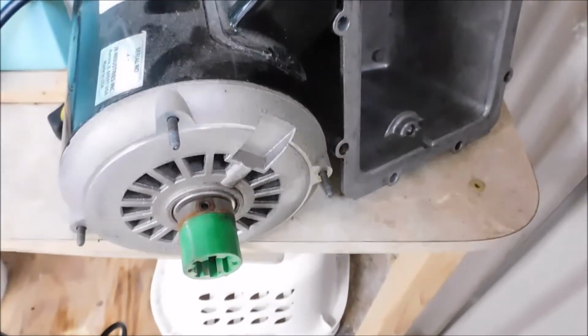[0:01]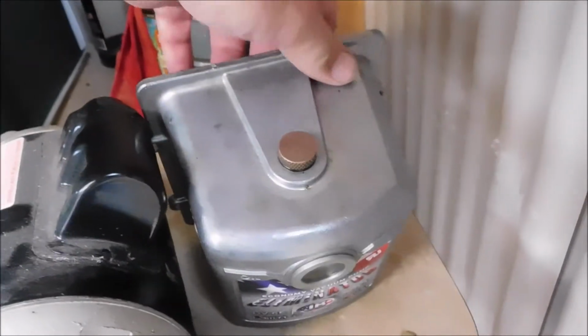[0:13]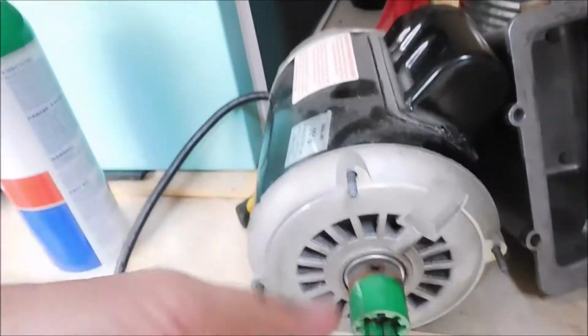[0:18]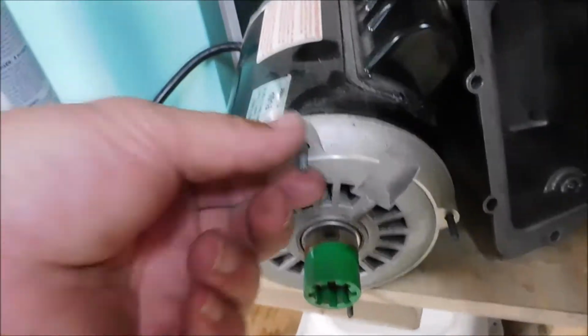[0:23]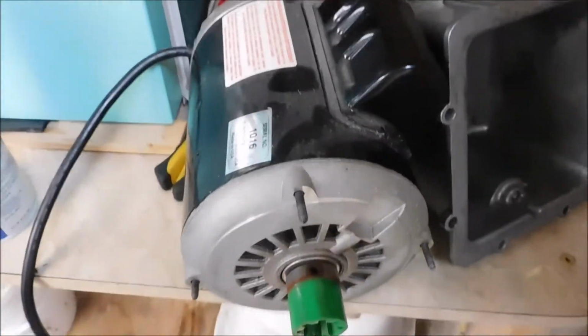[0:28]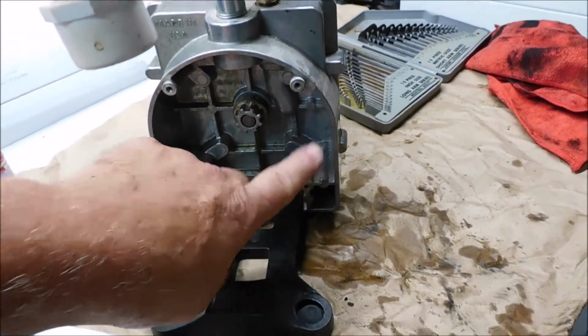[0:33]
Okay, I have to work on the vacuum pump for the freeze dryer, and I got the front cover off. Okay, and the motor, there's a little star coupling that goes from the motor. There's four long screws holding the pump in. There's four long screws go right in here. That star coupler goes right there.
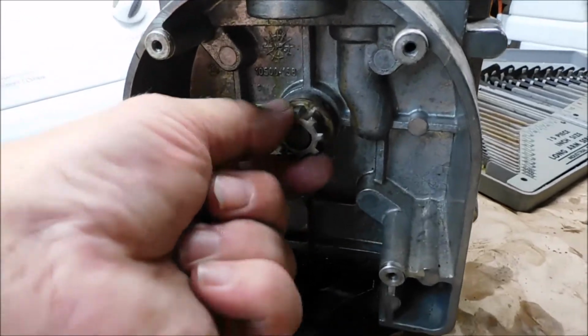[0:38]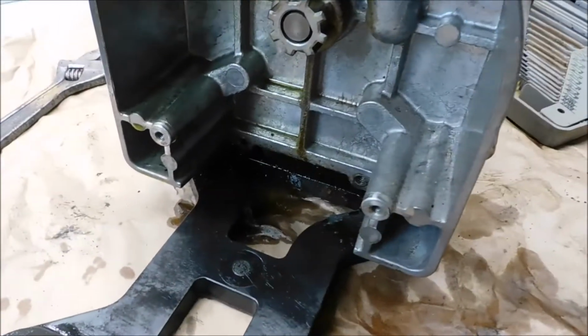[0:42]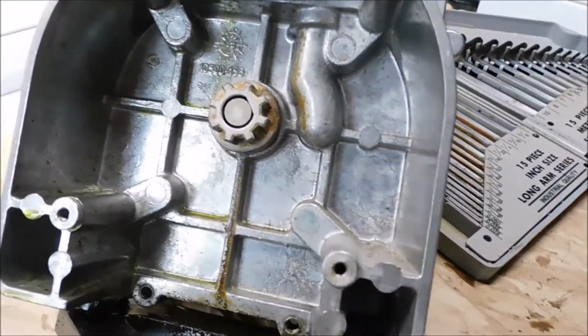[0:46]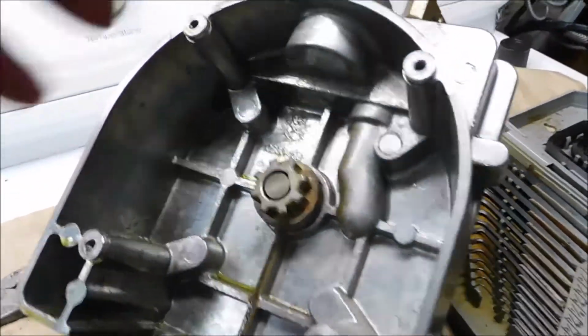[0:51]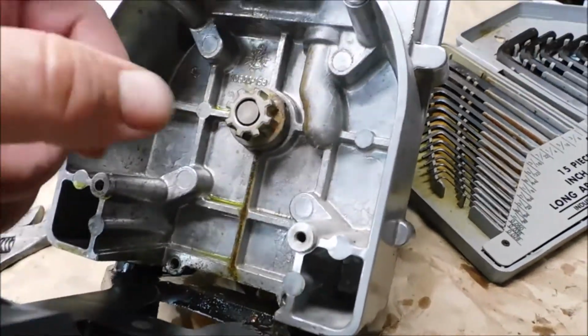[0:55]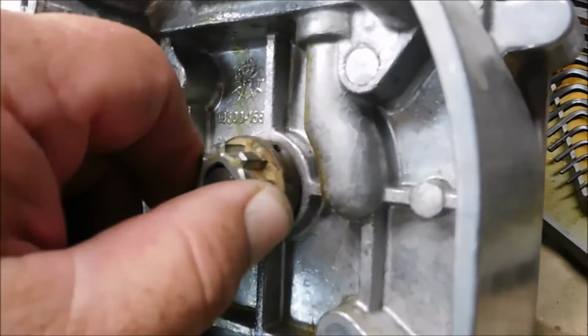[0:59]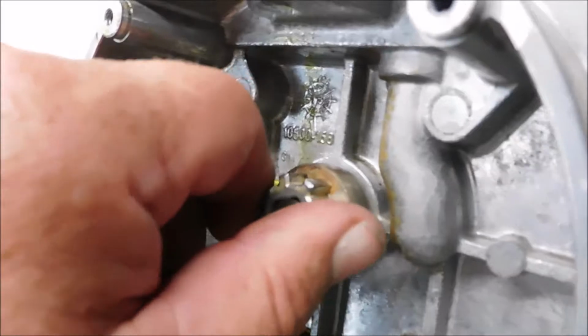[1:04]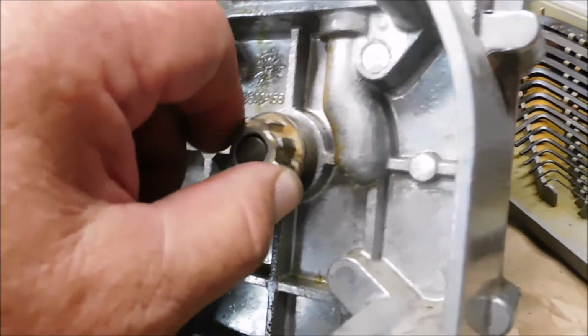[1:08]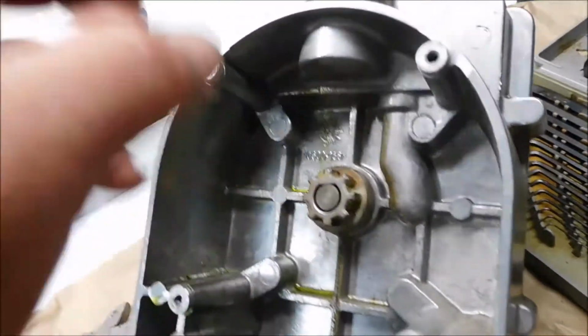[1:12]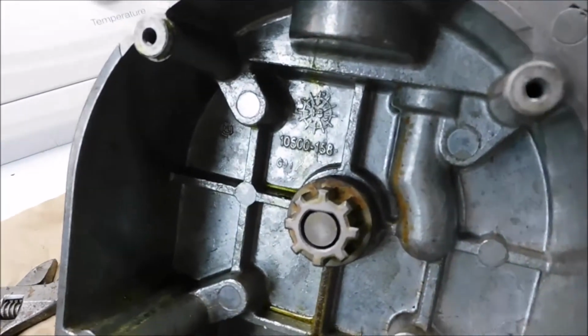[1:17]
Okay. There's a seal back in behind here. It's leaking. Okay. And I need to replace it. So you can tell by looking at these four corners that there's screws on the other side holding it in. There's also an Allen head set screw in there. Okay, so we got to get that off so that I can pull that shaft out. So I got to work on those two things. I think I'll give that a shot at WD. Okay, then this pump comes off the other side here.
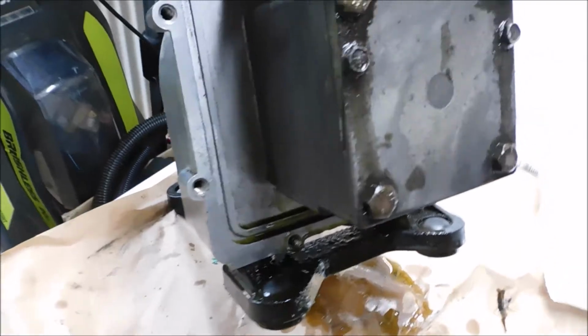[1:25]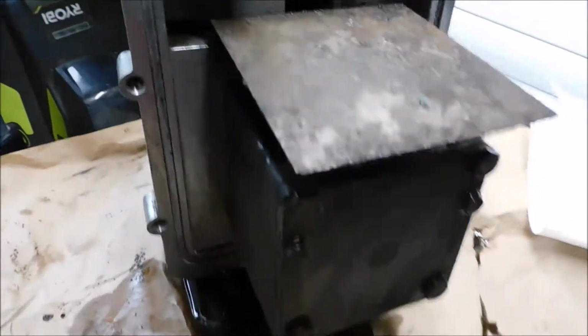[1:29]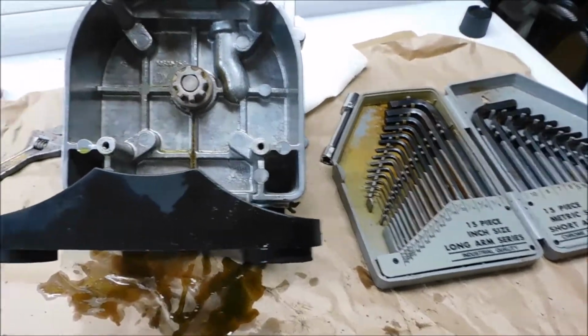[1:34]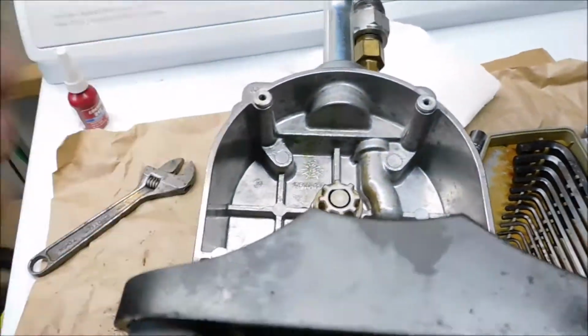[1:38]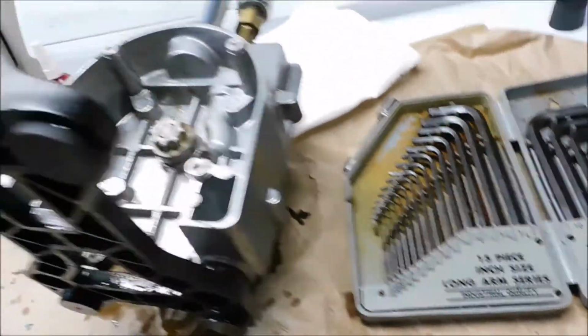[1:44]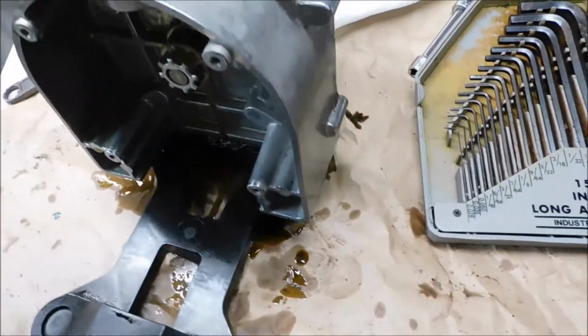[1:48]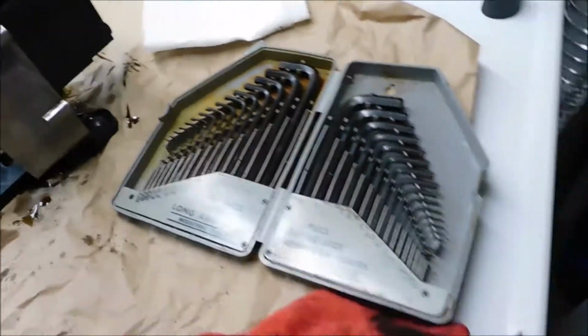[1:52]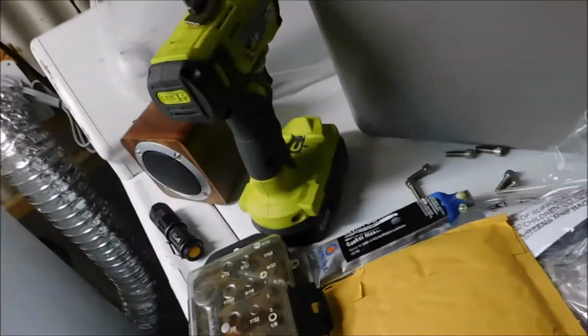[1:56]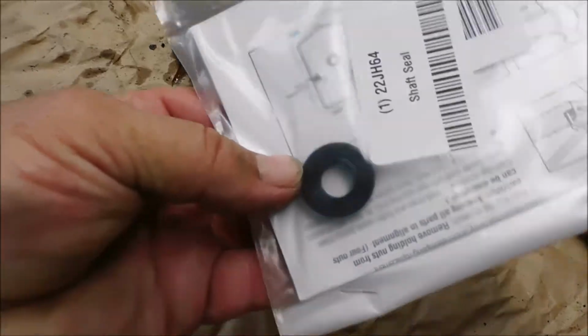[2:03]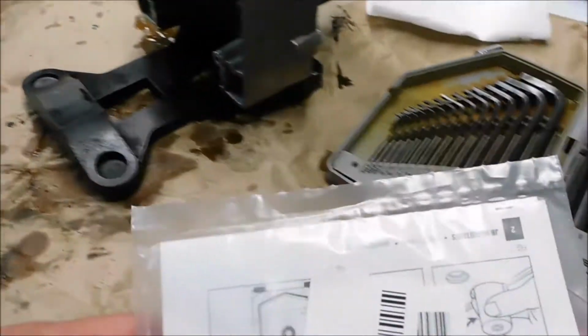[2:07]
So, yeah. Freeze dryer doesn't work too good without vacuum, and it just wouldn't pull a good vacuum, and it was dripping oil. And so I ordered me a new seal, a new pump. Cost over $300. I paid $3.02 for a new seal. Okay, for the back end of that over there. So we're going to change it out.
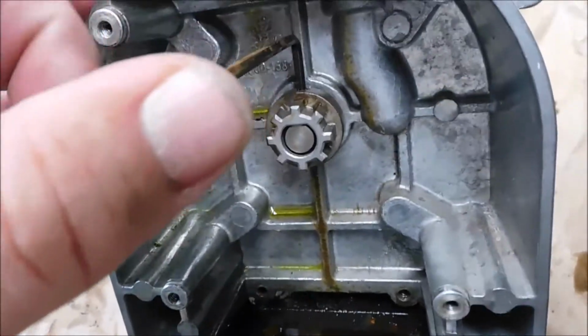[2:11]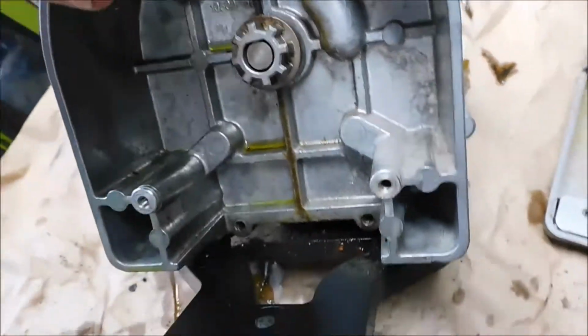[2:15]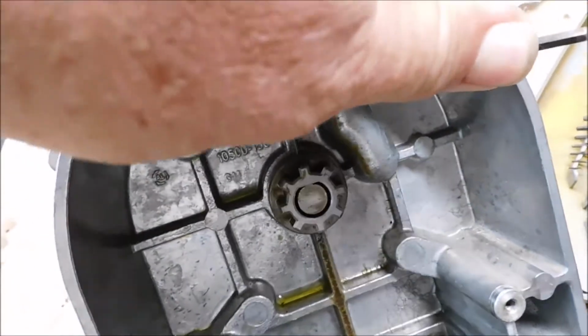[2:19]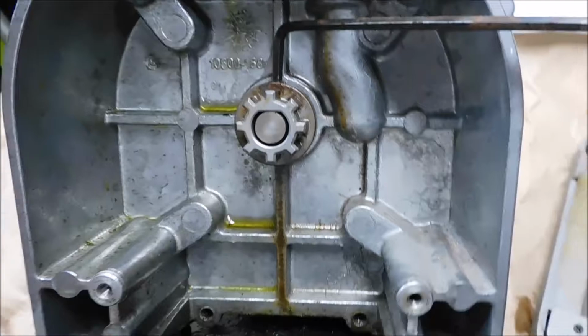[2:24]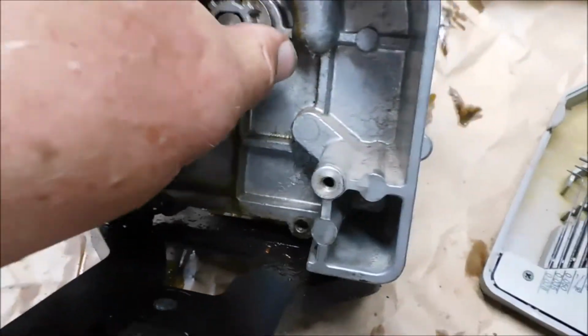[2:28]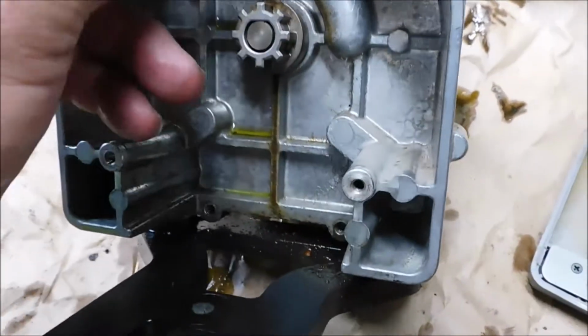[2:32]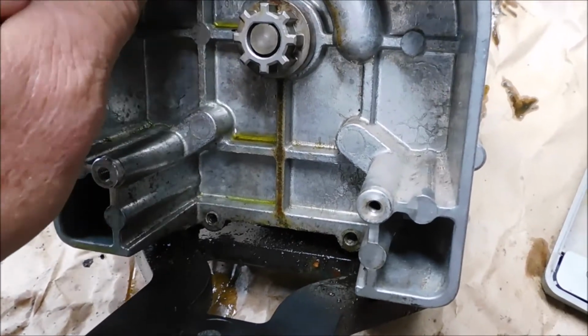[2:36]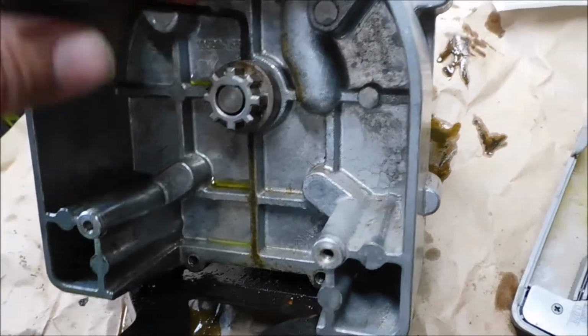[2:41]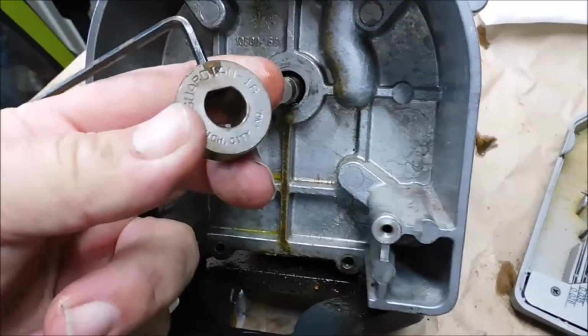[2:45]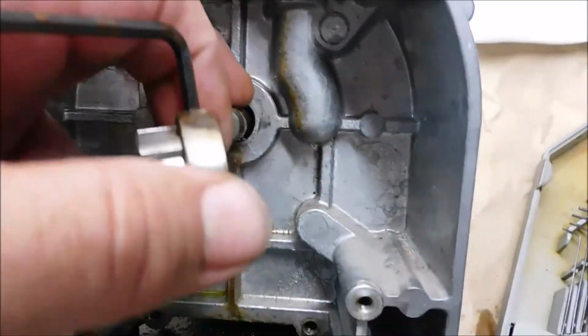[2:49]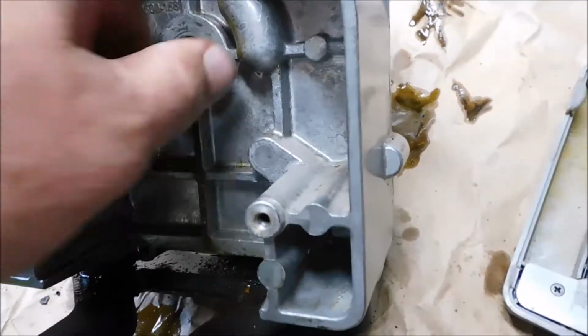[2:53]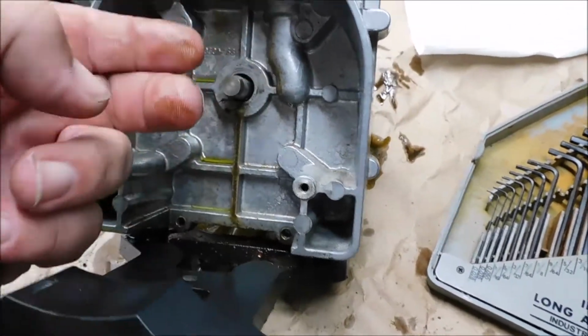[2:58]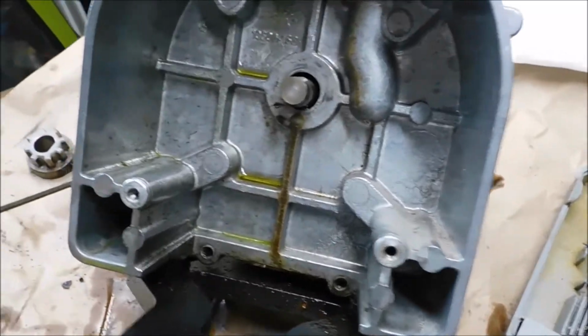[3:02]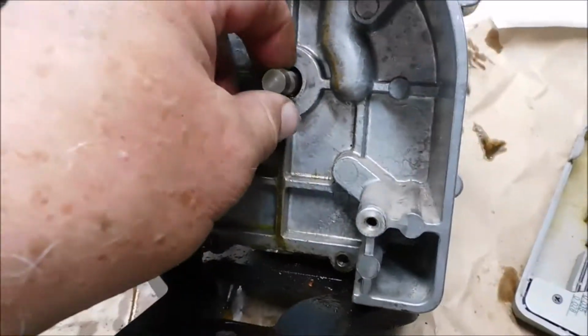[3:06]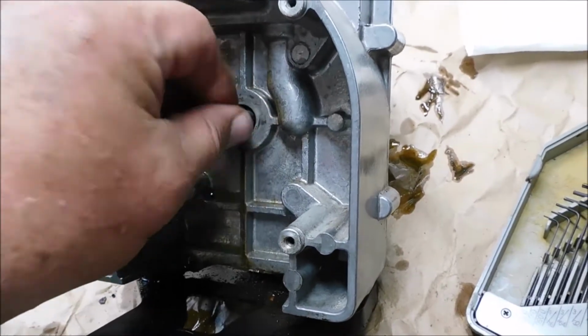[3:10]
Okay, so here's the Allen wrench. Feels a little stiff, like they might have had some Loctite on it or something. That's what I'm going to do. I don't want it falling off, I'll tell you that. Let me get another bite on there. There we go. Nothing to it. Pretty easy. Now make sure that shaft's nice and clean and smooth when you pull it out. Now I know we're not going to worry about that seal on the way out, but we will on the way in. And there's no sense tearing anything up that you don't have to. It's just common practice to make sure that that's clean, smooth, and ready to go out the shaft.
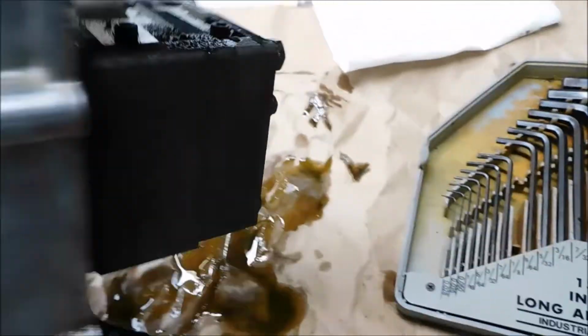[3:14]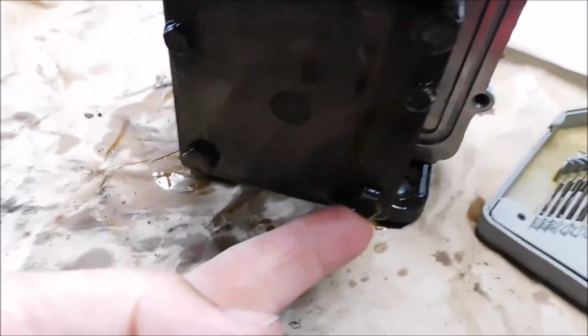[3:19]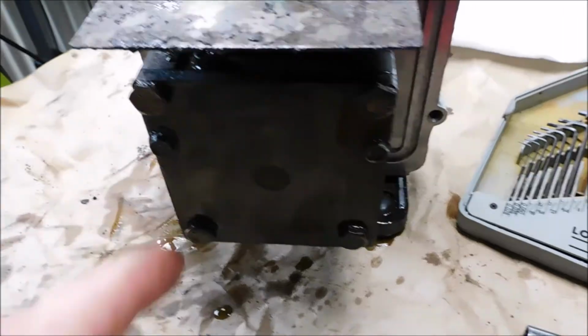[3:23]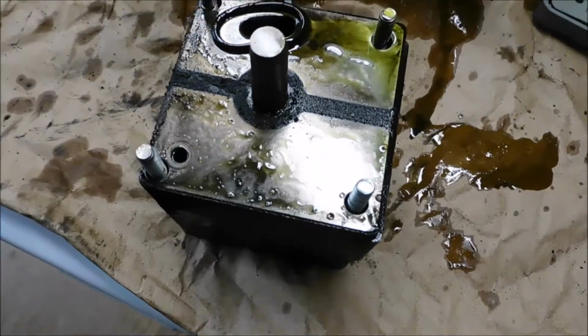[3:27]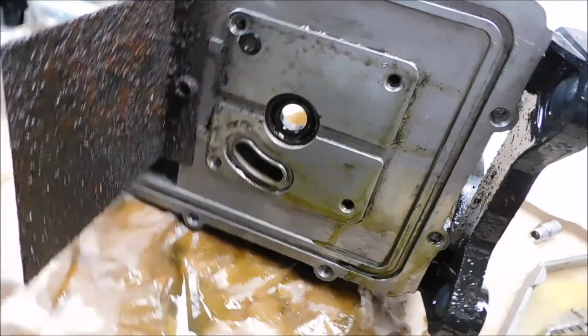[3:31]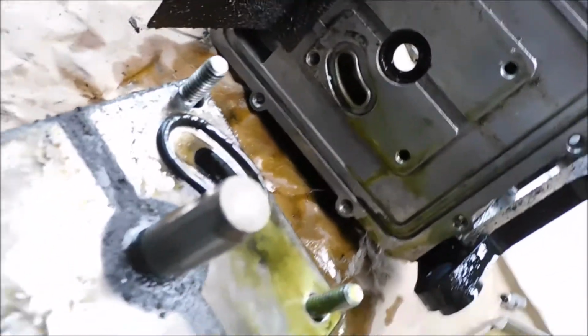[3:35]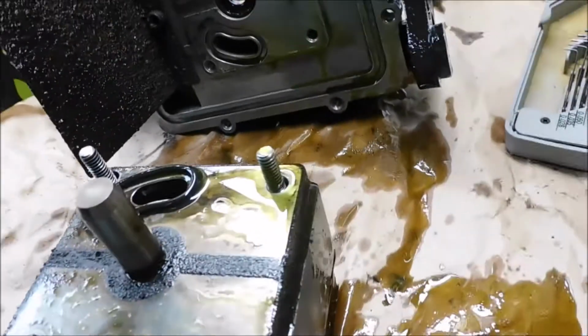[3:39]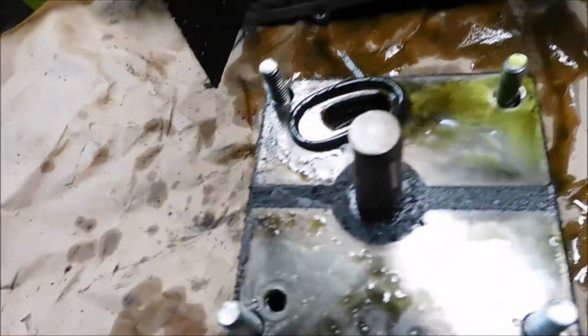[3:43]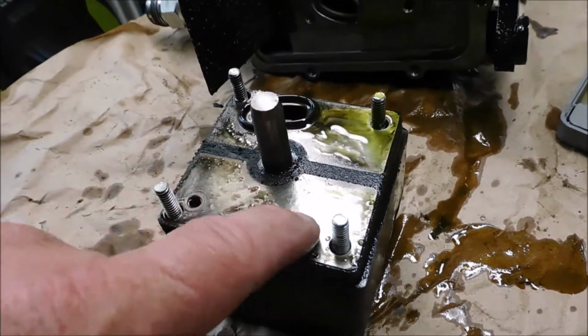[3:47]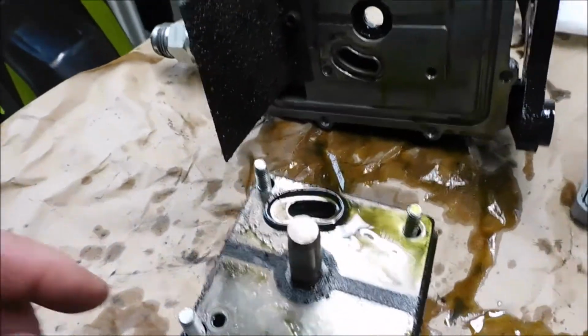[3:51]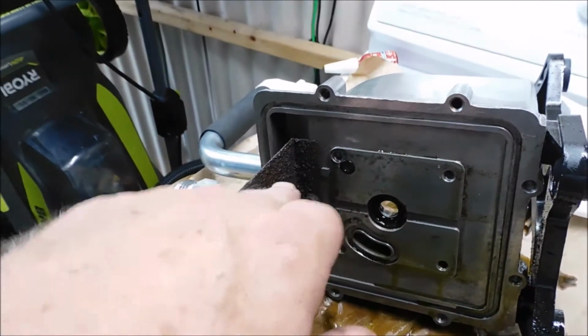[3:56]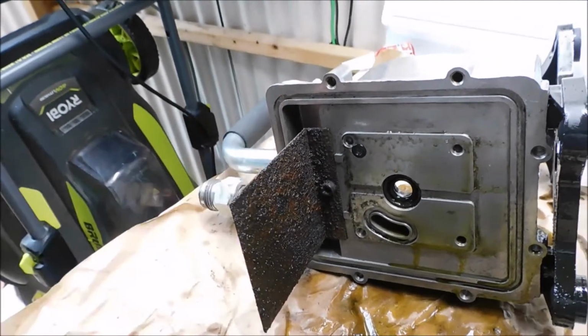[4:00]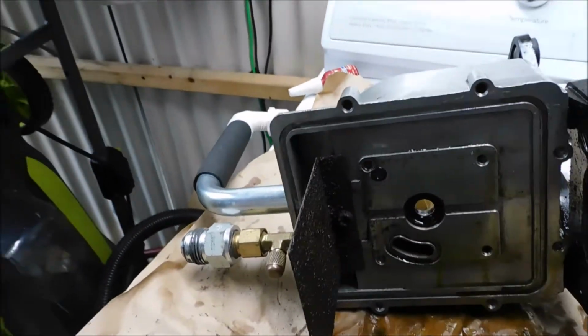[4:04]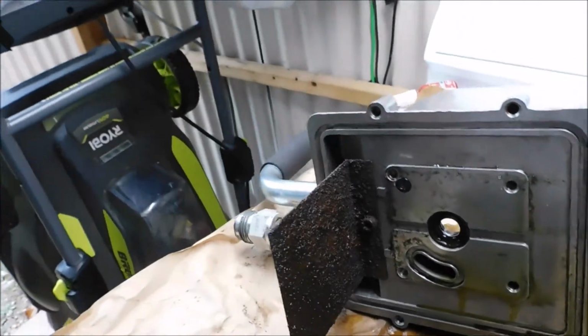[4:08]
So we'll go ahead and pull these four bolts out then on this side here. And get them out. Pull that pump out. Okay, there's the pump. You can see where it came from. It actually goes like this. That's where it came out of. And it's pretty dirty, so I'm going to do a little cleaning on it. And hose her down, shine her up a little bit, get some of the crud off of it, and particles. I'll get all that cleaned out. I think I'll take this out and clean it. A little moisture up in that vacuum pump, and over the several years that I've had it, it's rusting. You'd think they'd make that out of stainless, huh?
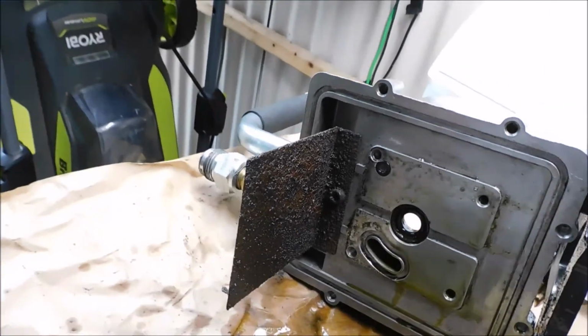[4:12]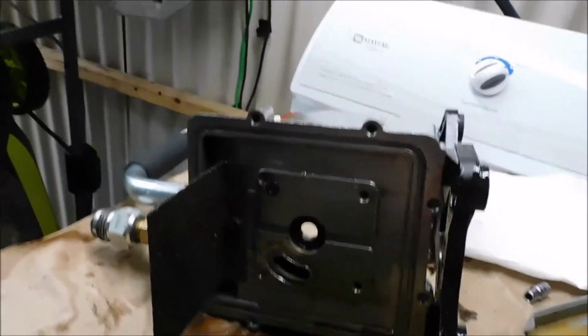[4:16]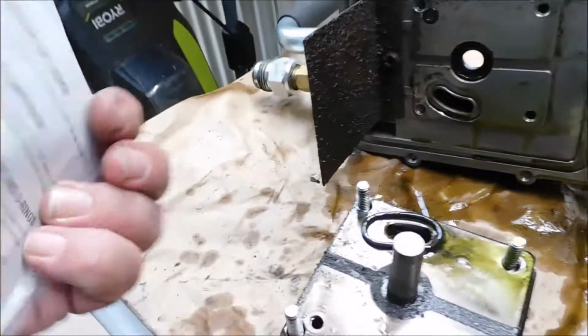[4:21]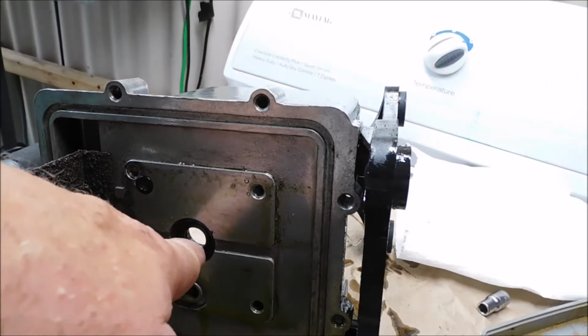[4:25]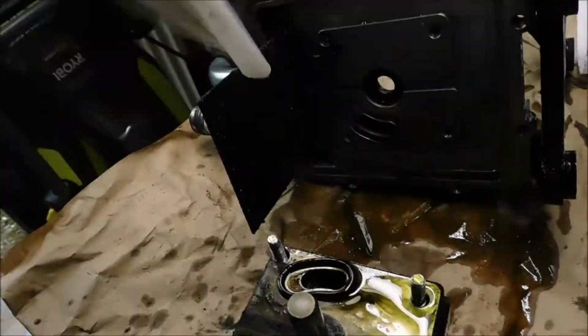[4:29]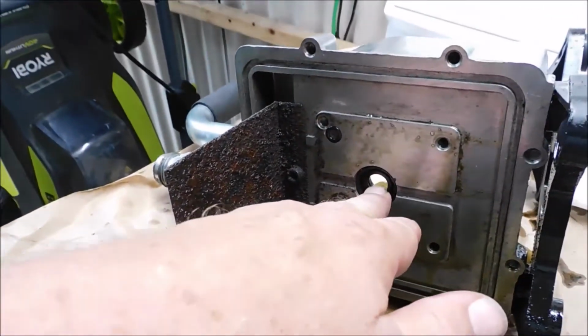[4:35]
Alright, well, there's that seal that we want. So we're gonna go ahead and pop that out and then pop the new one in. You have to note which way it's facing. That way it'll go in like that. So yeah, definitely don't want to get it in backwards.
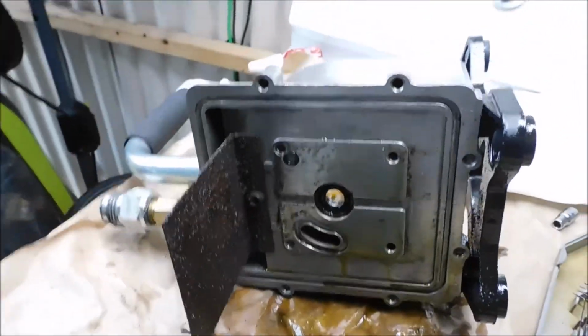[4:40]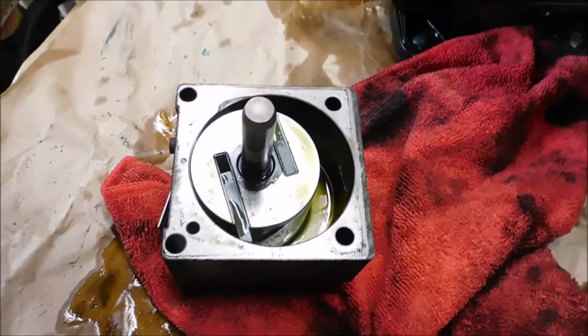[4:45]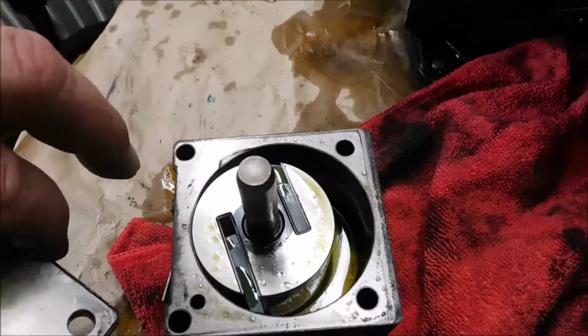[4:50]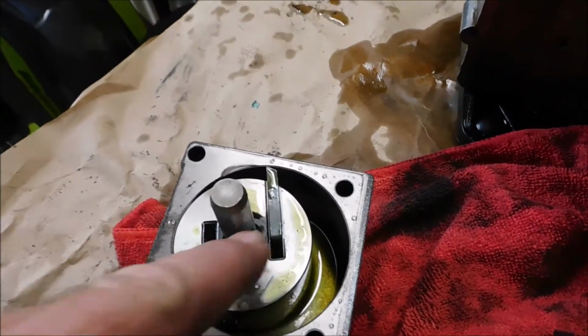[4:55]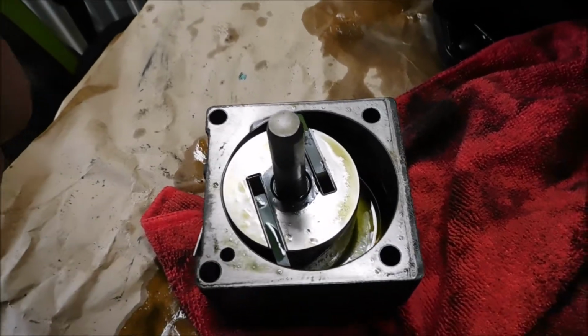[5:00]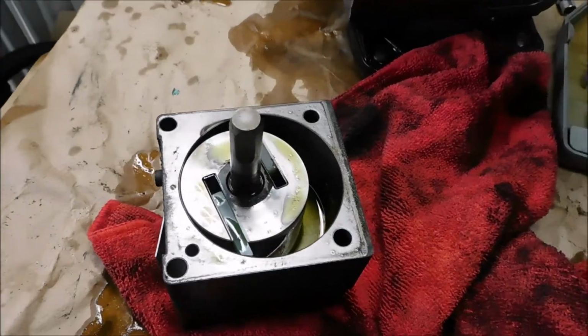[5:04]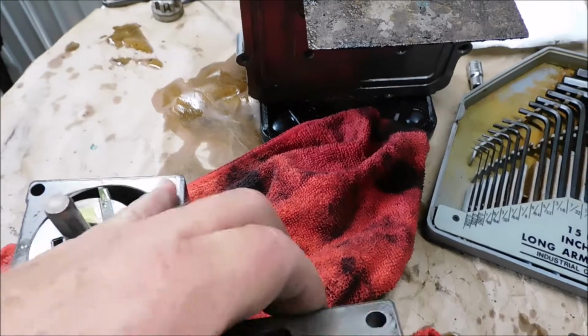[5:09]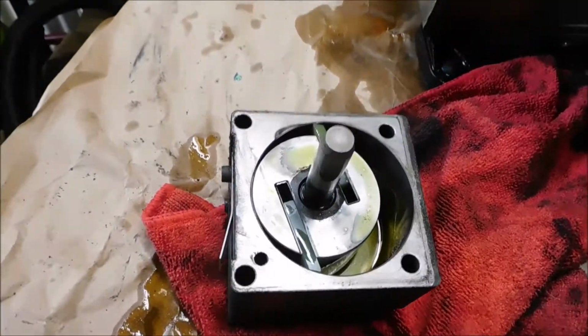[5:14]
Okay, got the pump out, cleaned out. That's what it looks like inside there. It's a vane pump, only has two vanes, and centrifugal force pushes them out. And of course, the pump runs around the circle like any other pump. That's all there is to it, not a whole lot. But hard to believe, $300, huh? For that, that's the pump.
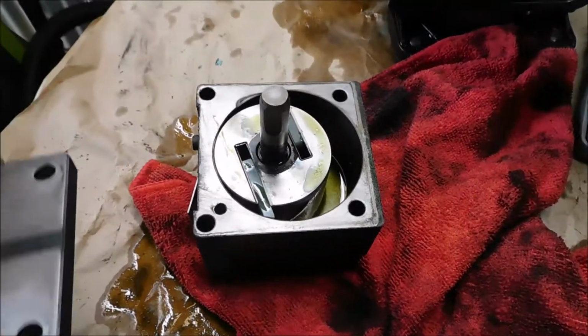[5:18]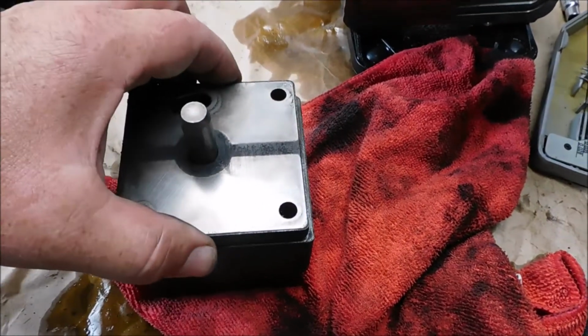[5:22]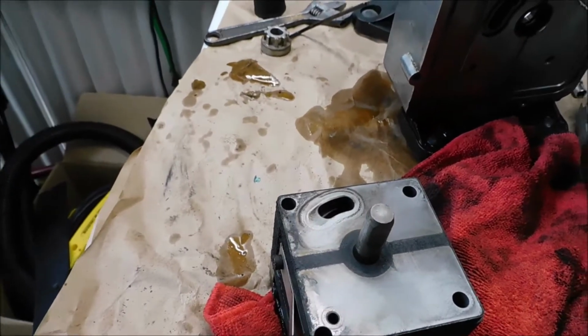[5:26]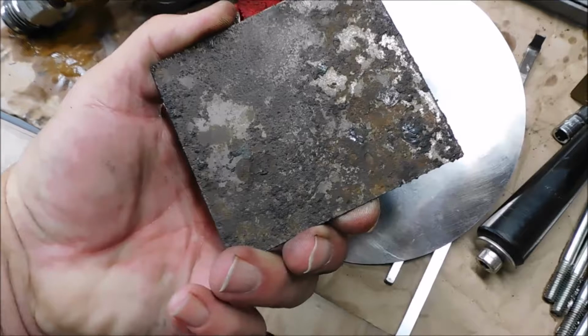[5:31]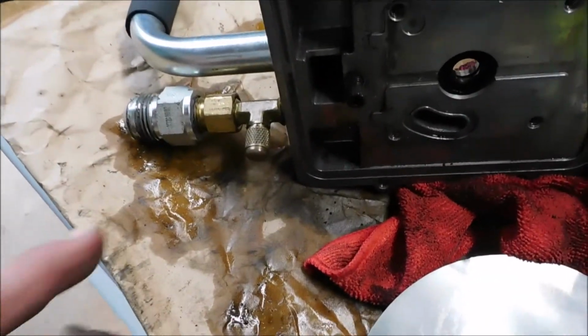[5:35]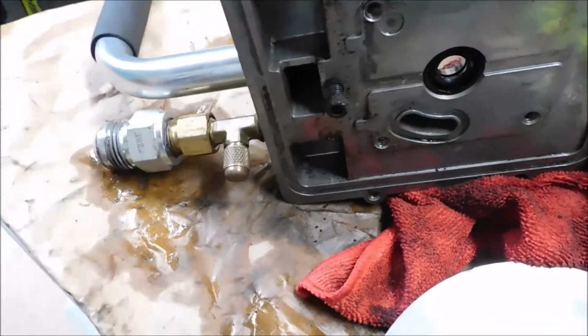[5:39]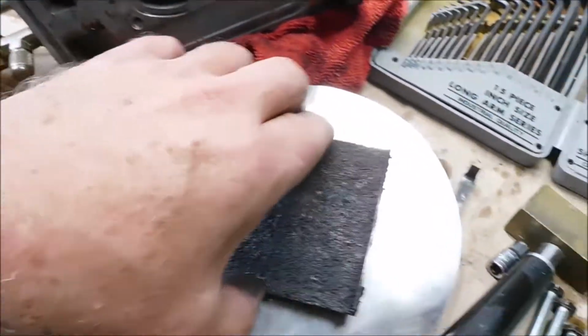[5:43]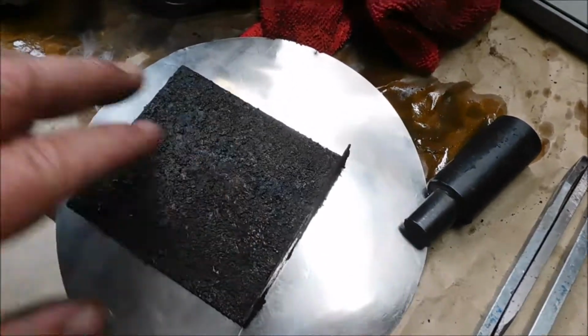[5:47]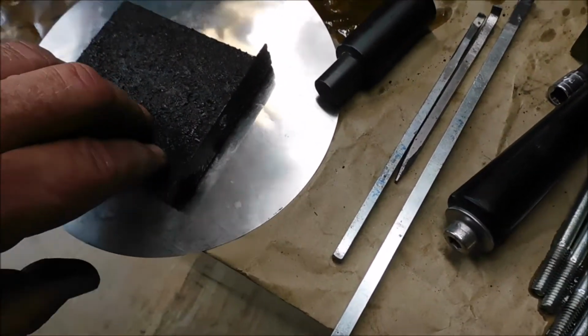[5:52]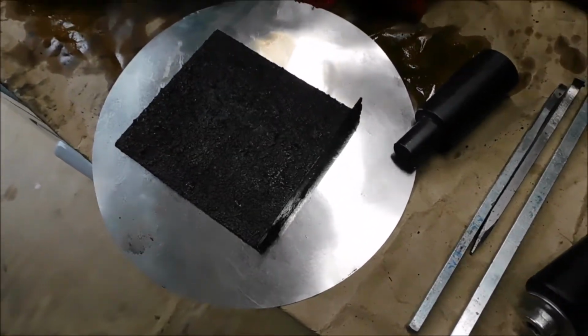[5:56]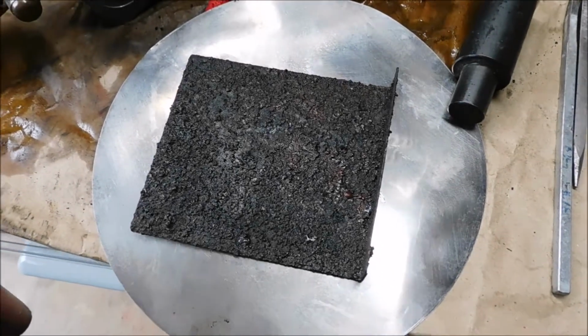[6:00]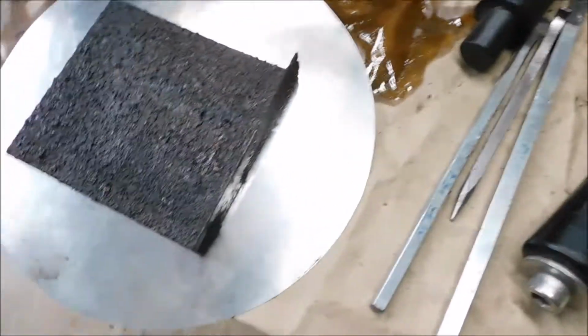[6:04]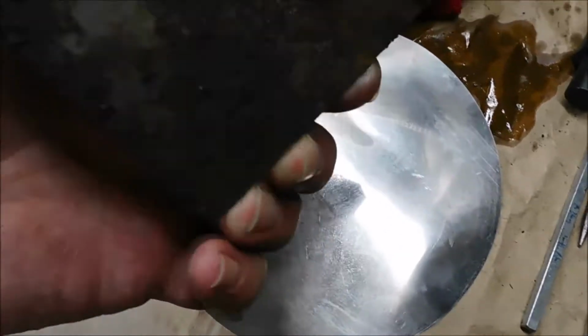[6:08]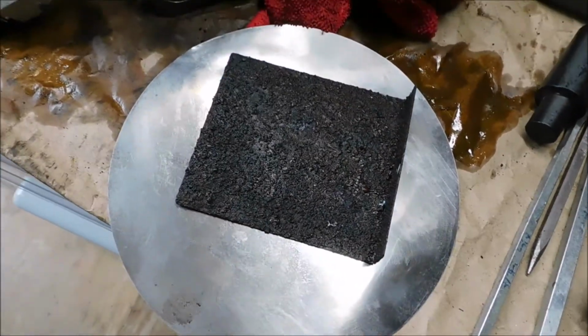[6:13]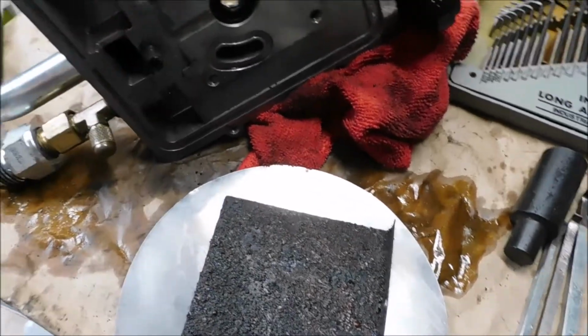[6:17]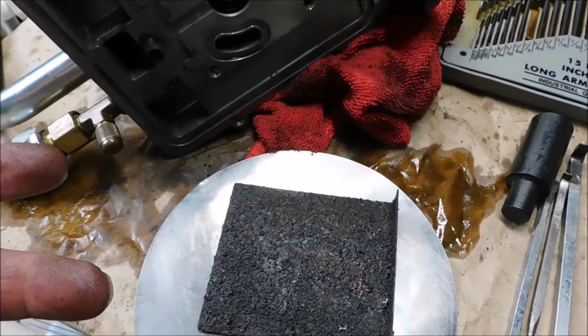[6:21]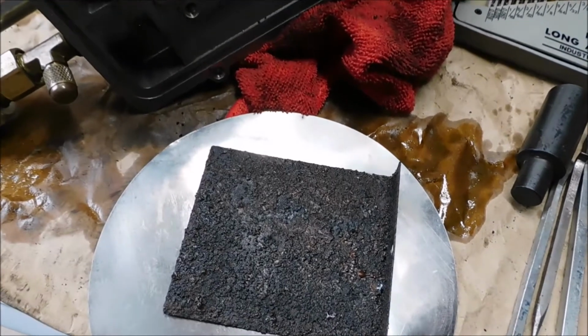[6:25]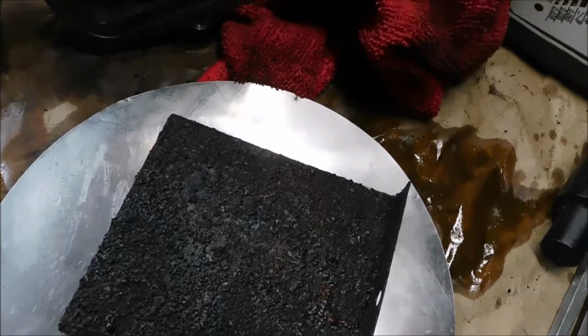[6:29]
Okay, I think I'm gonna make a new plate. It's just a splash guard to keep oil from going up the out tube, the exhaust. And I think I can make something out of this. It's a little thin, but it's just a splash guard, so it can't hurt anything. That's what I'm gonna do. I'll make me up one. I'll bend it up, put it in there, and that way I won't have this rust problem again getting down into my pump. Can't be any good if it gets into them vanes, I'll tell you that. There's no filter on it. I don't know how it keeps dirt out. So that's what I'm gonna do.
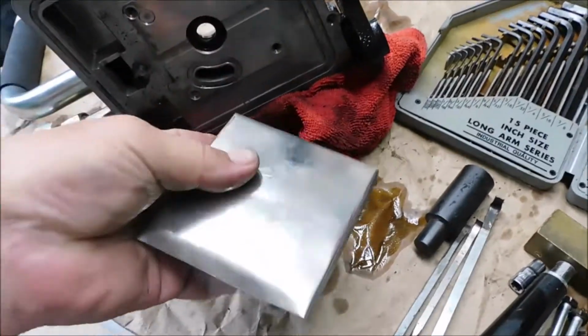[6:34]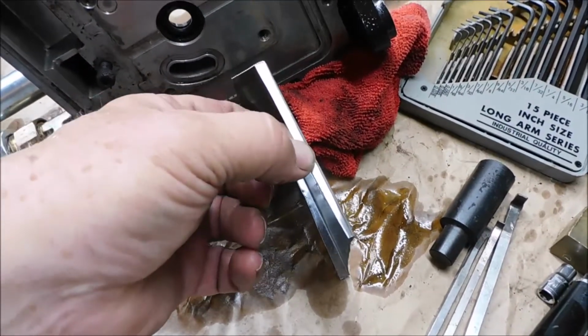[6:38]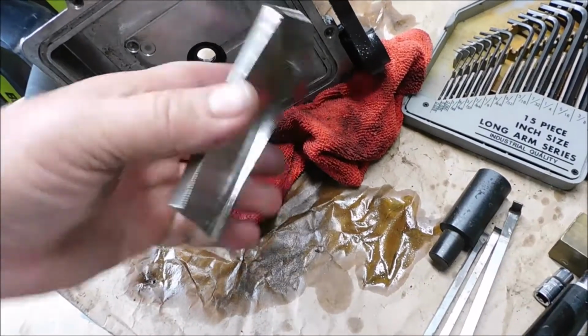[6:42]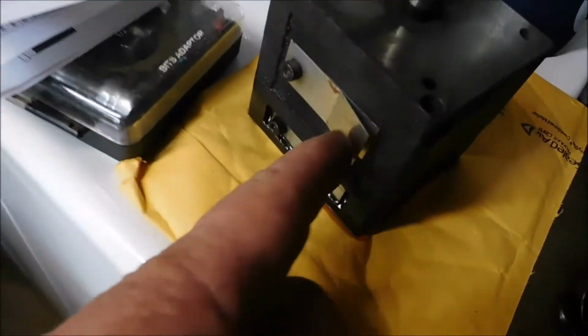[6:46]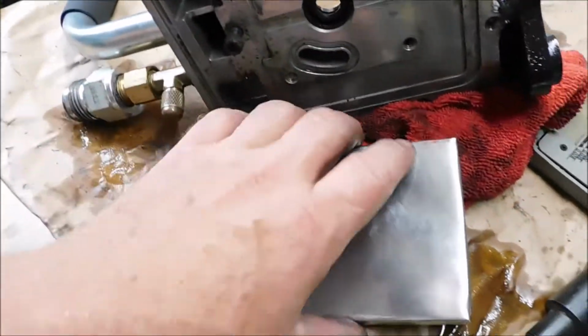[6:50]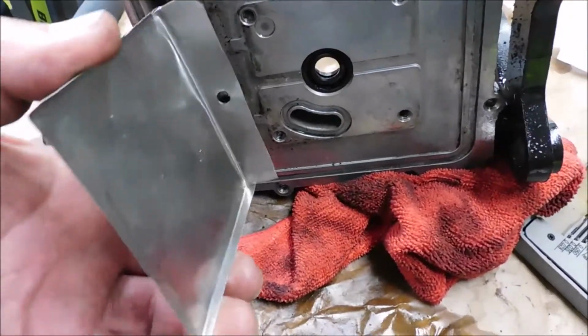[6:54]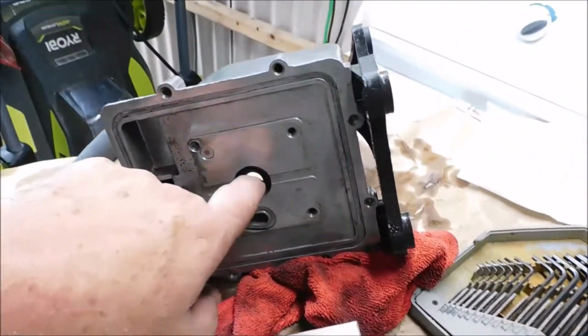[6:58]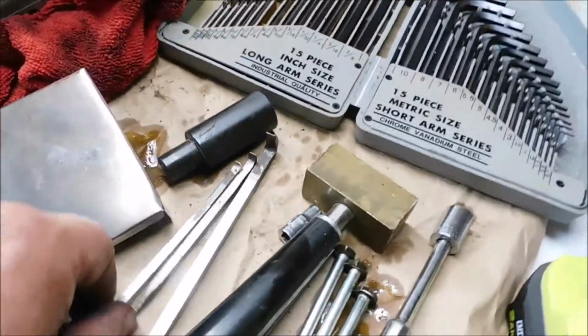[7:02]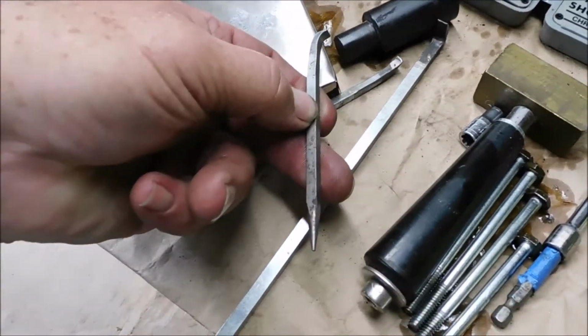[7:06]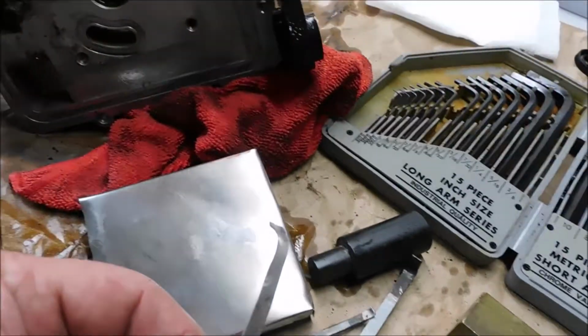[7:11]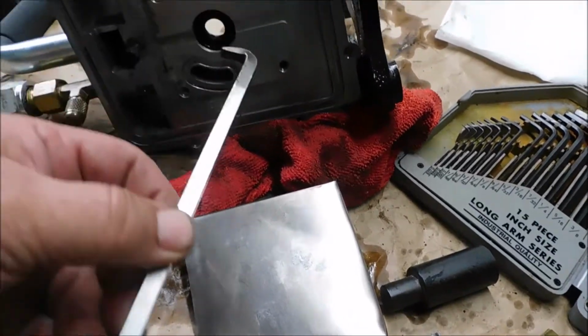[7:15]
Okay, one splash guard. I bent the sides down a little bit just to make sure that when it gets hot, it doesn't warp and bend. Okay, there is valves on the top of that, so I don't want that to hit my valves. And I'll just clean this up, put this all back together, and get that seal changed out. I have a couple of small tools that I made for doing things like this, getting up into tight spots, prying seals out, bearings out.
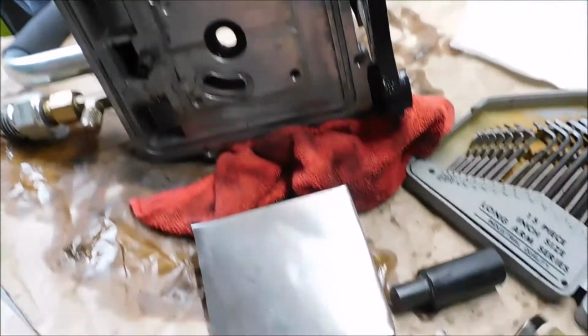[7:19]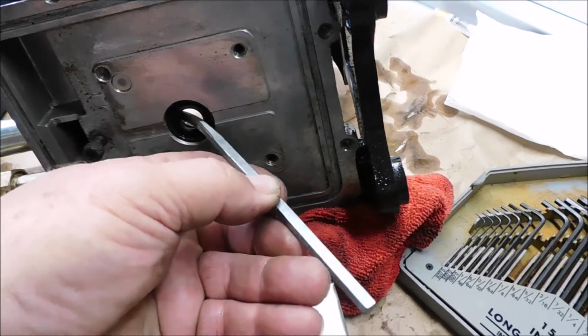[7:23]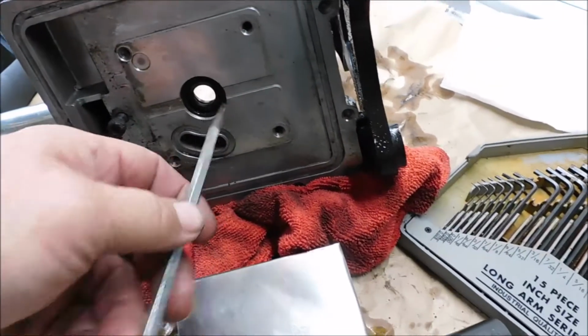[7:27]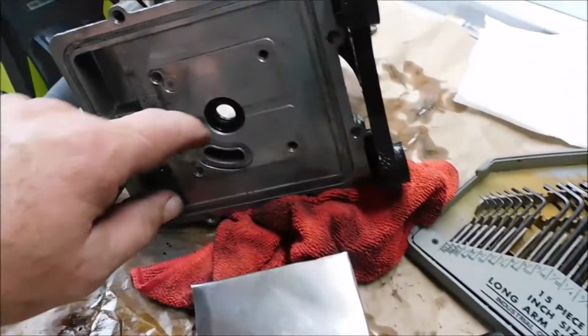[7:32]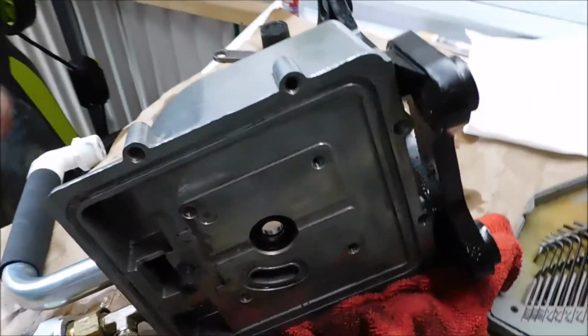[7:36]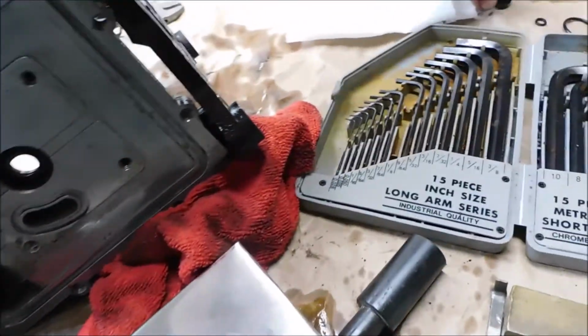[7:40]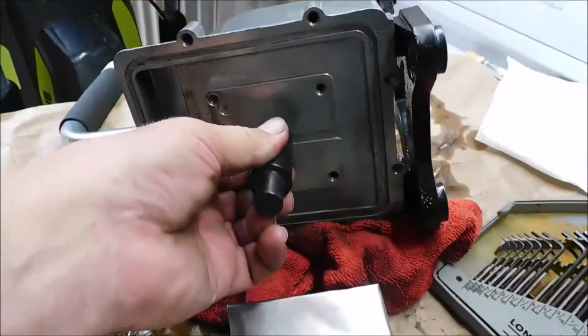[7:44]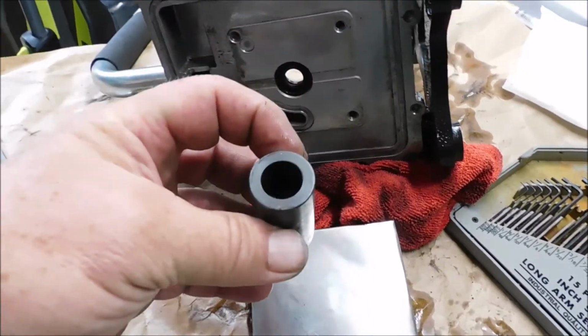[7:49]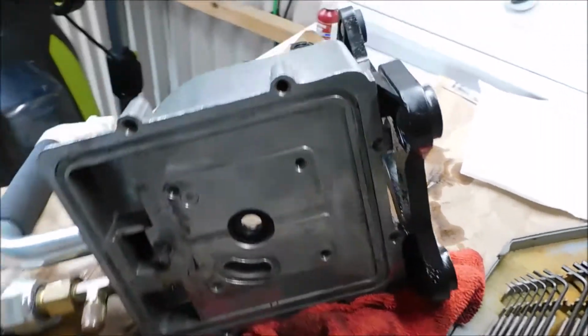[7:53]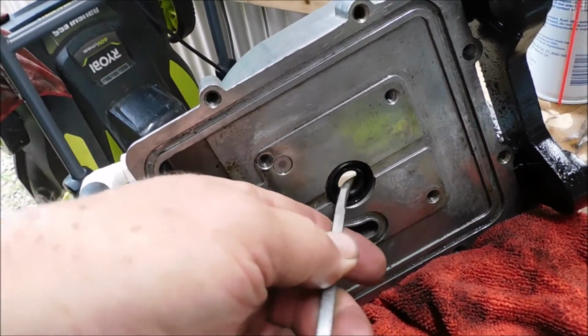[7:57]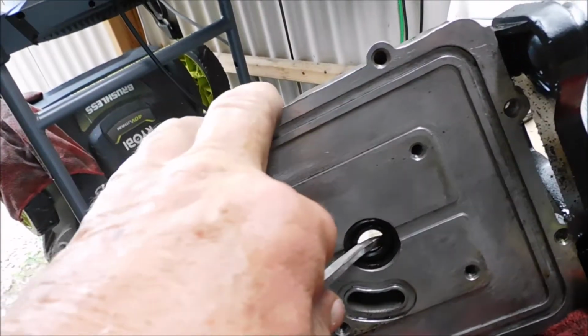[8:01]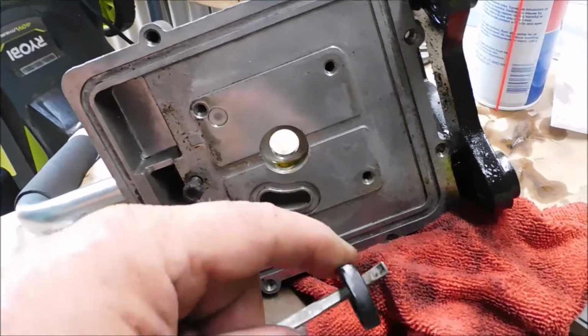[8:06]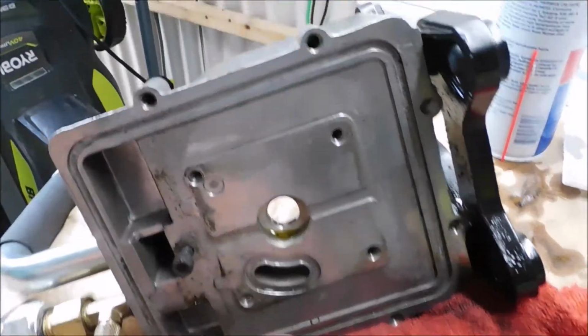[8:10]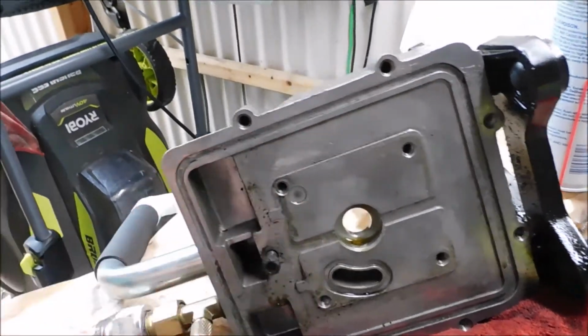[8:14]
So probably this one here, pop it out. Don't have to be too careful pulling it out, but you try to pull it straight out so you don't scar the sides. And the other one will just push in. Try to find a right size round to push it right in. You can use a socket. I got this. But you can use a socket to push it in. I wasn't sure if I could do this one-handed or not, but yeah. Get up in there, up underneath there, and pry, and pops right out. See, there is a sealant on here, so I'm going to put a sealant on there again after I clean this all out.
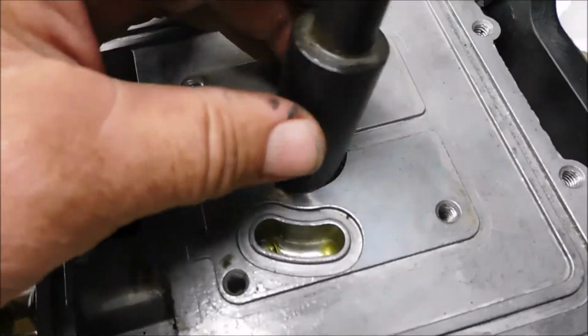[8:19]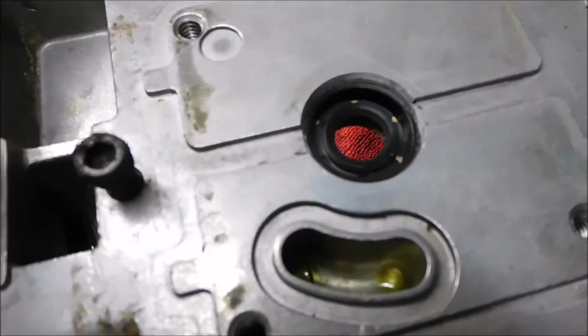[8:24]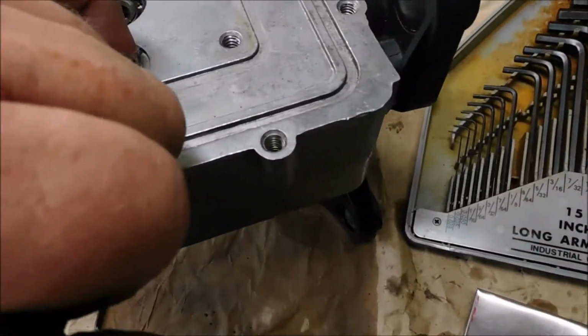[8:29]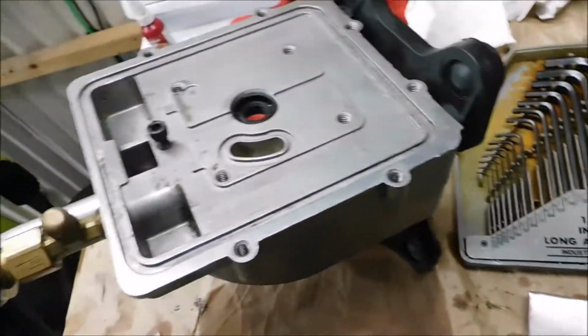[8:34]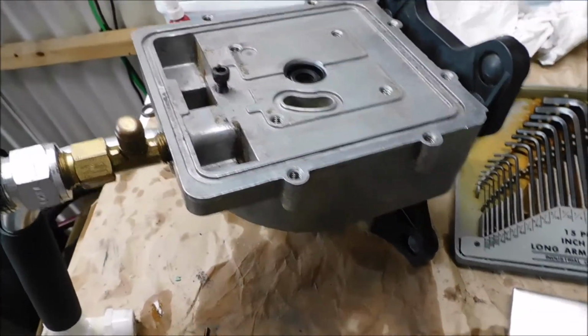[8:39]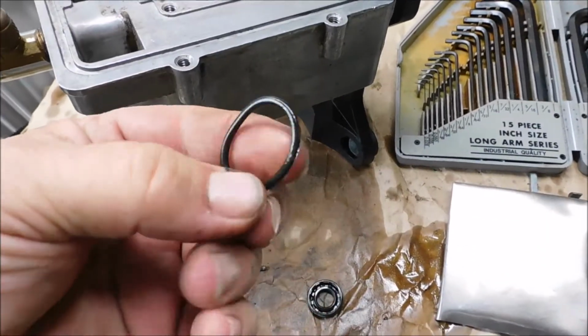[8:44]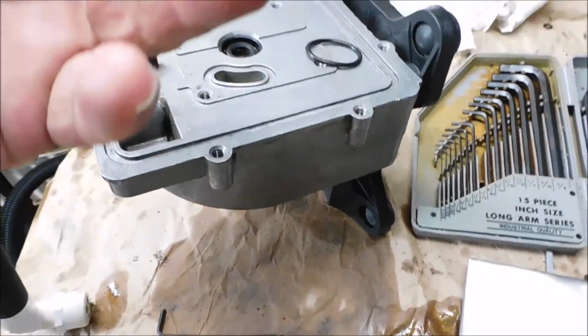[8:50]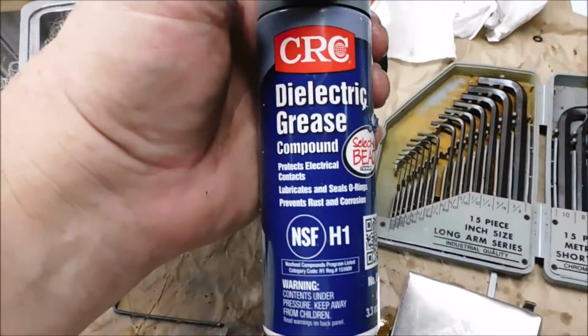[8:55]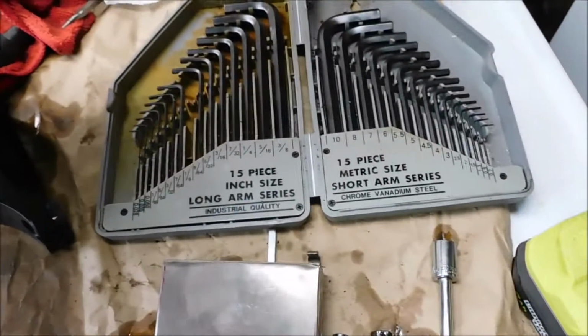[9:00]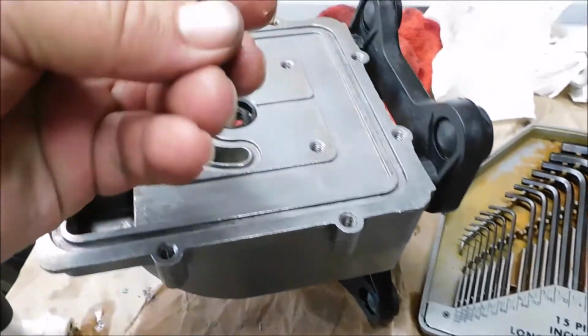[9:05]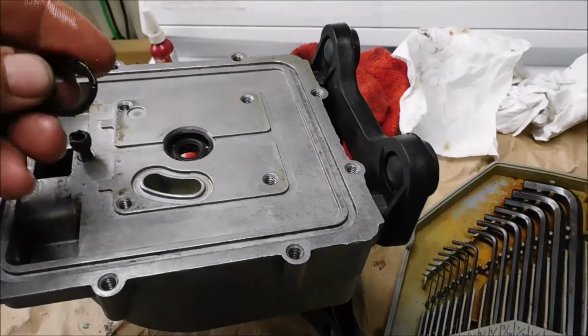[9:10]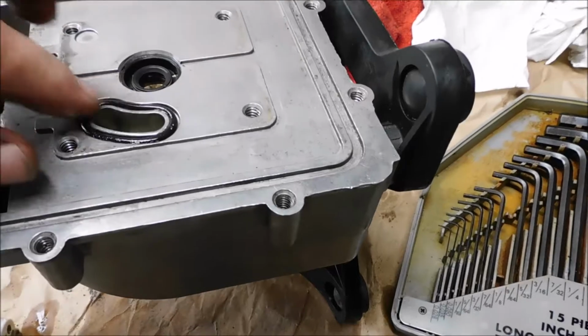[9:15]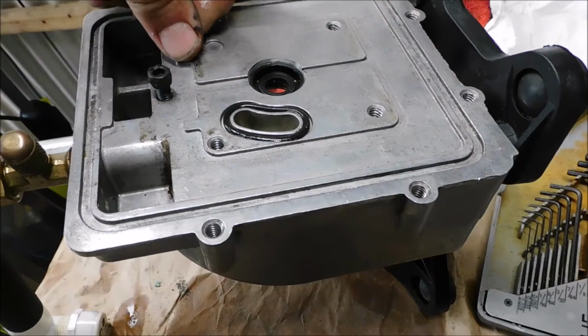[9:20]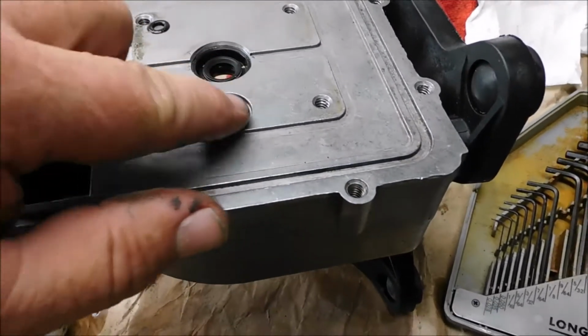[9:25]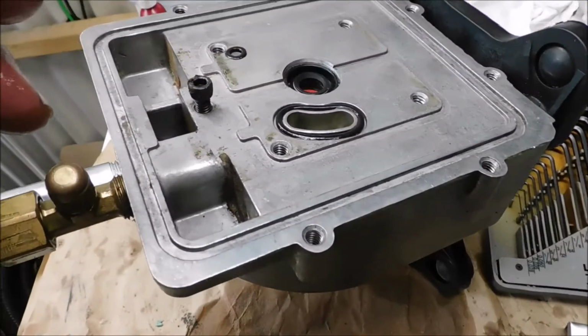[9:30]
Okay, like I said, just a little tap to seat that. Got that down in there good. And now it's time to clean everything up, make sure there's no dust, dirt particles, anything like that, and I can start putting it back together. I like to take silicone and coat the rubber, any rubber seals, and that's just dielectric grease. You can pick it up at any auto store, but I like to put it on all the rubber seals, and it adds years of life to them, and it's compatible with anything that I'm using right now. There's two of them here in this. Get them nice and drenched. Helps them seal good, softens them up, and keeps them from drying out.
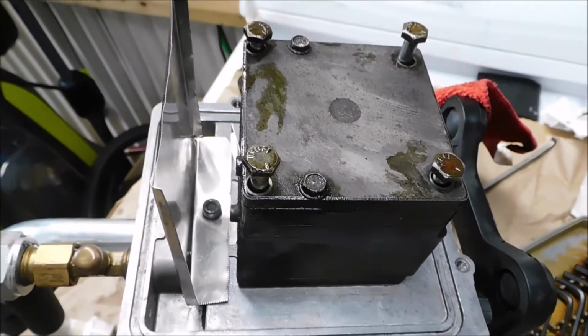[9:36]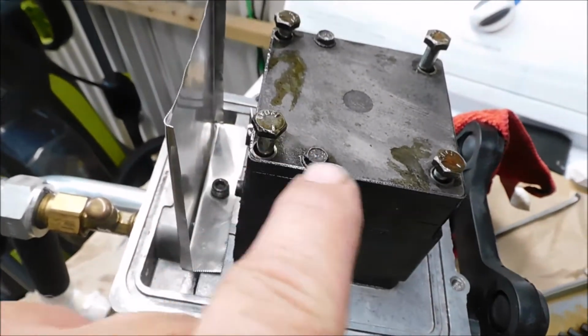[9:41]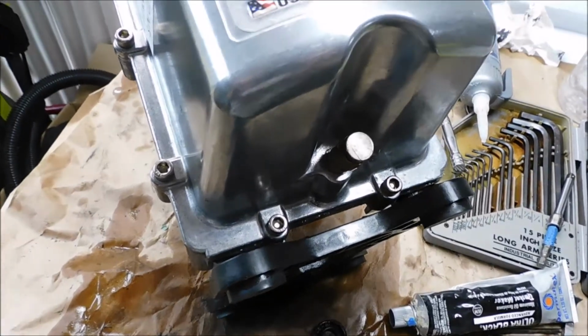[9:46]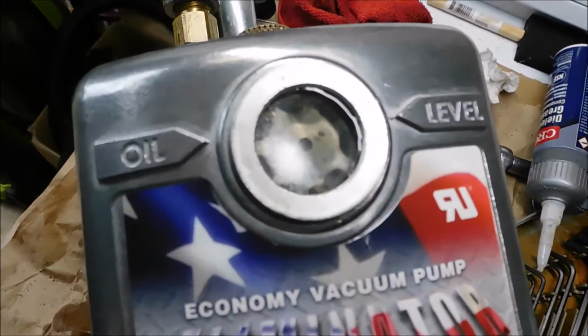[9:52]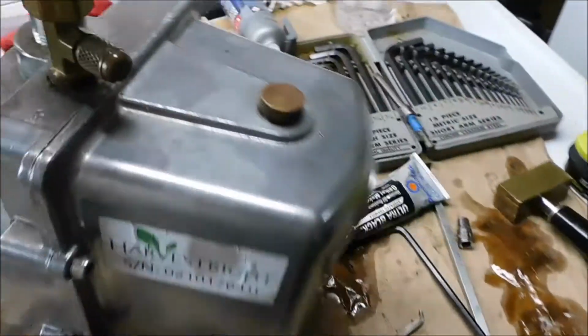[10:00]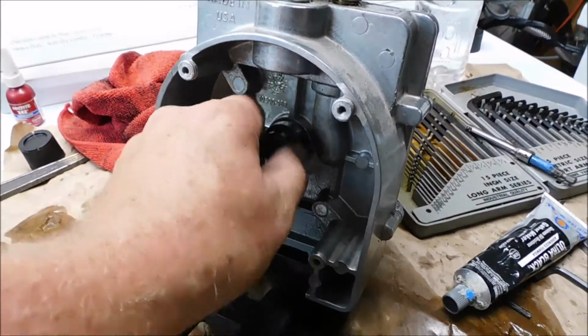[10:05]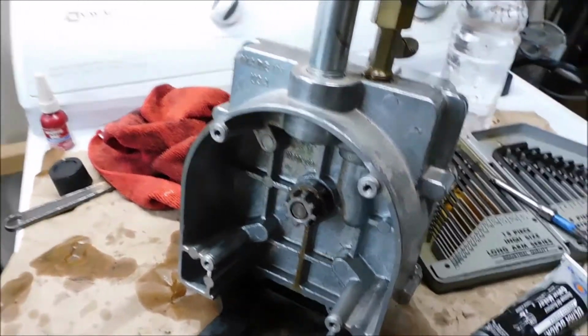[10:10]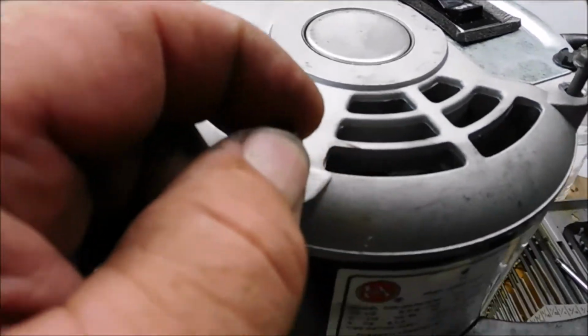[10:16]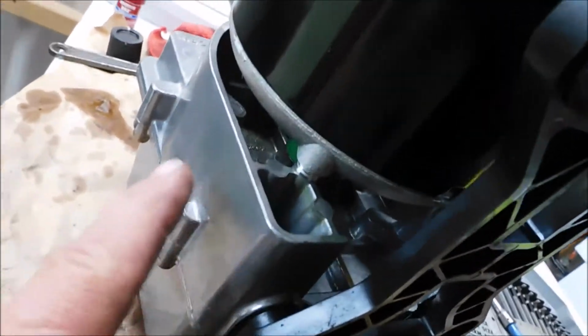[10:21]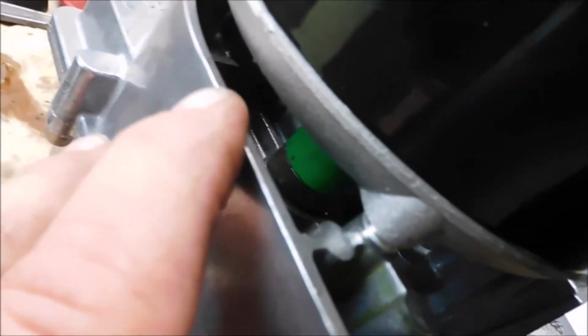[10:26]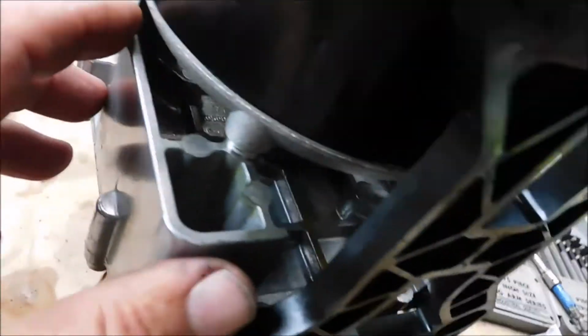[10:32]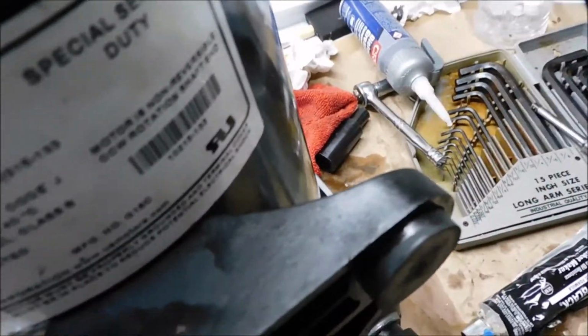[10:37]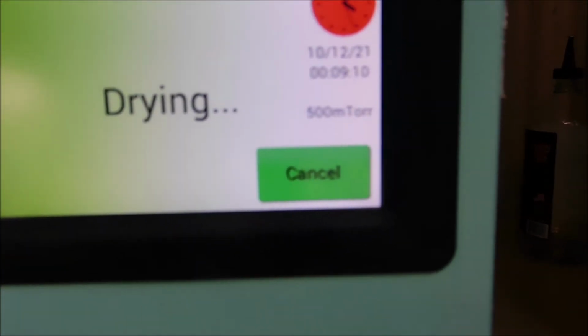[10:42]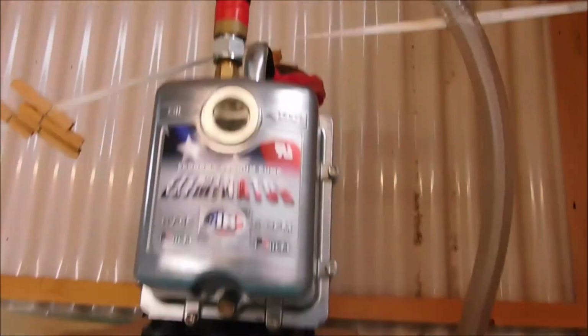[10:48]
That's it going back together. I got my splash guard on there. Okay. And I got to tighten up these four bolts in. Okay, cover's back on. Sight glass looks a little cleaner. Yeah, got rid of a lot of dirt. Okay, we're ready for the motor. Time to put the motor on. We're good to go. You can see the long screws here. They go all the way through, and couple that motor to the pump. See that green shaft coupler in there? Okay, all we gotta do is tighten it down. Start it up. I don't know if you can see that or not, but it's working. She's running.